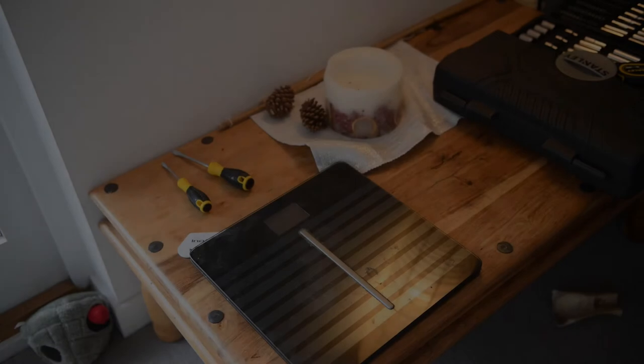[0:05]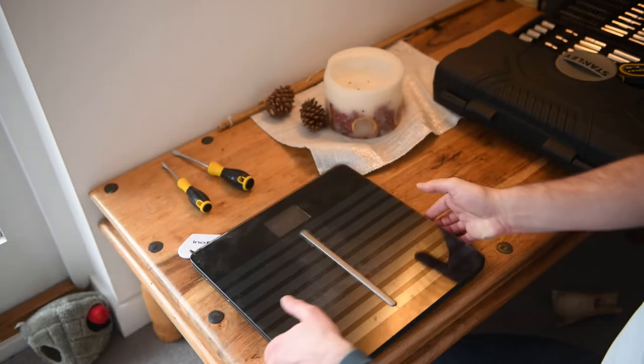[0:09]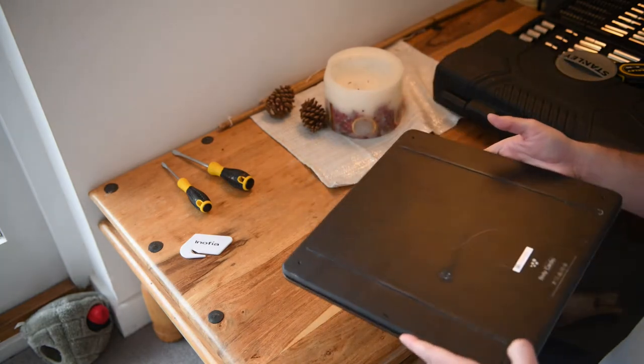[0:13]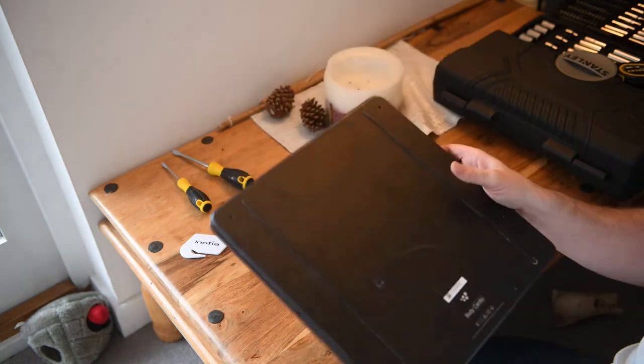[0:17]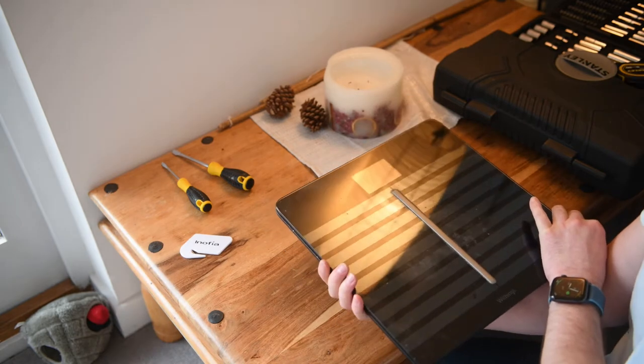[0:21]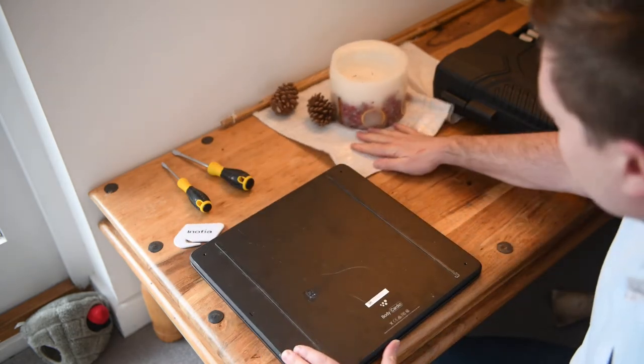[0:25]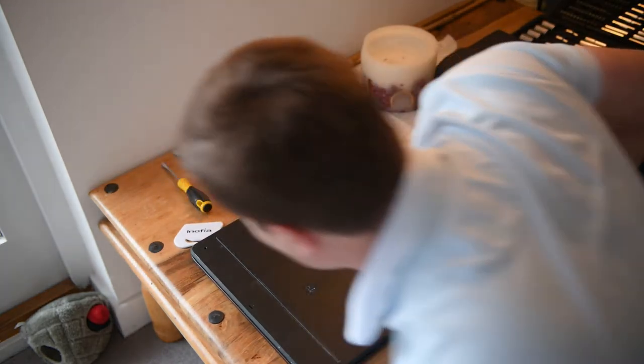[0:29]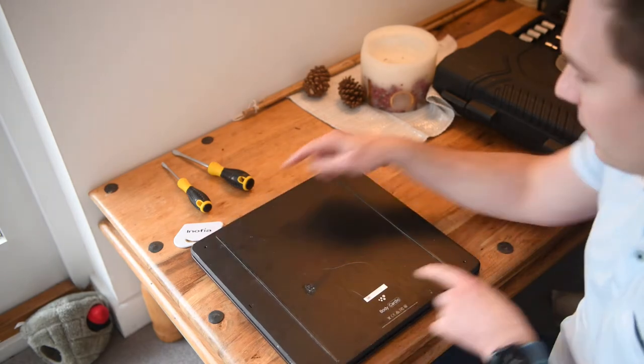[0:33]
Okay, so I wanted to make a quick video because I have not seen any good instructions on how to replace the batteries on the Withings Body Cardio Smart Scale. I guess it's now Nokia. I did a bit of research, and there's no real videos, but there's a few comments about it. So basically you need a T6 screwdriver to take out four little screws in the back of the device.
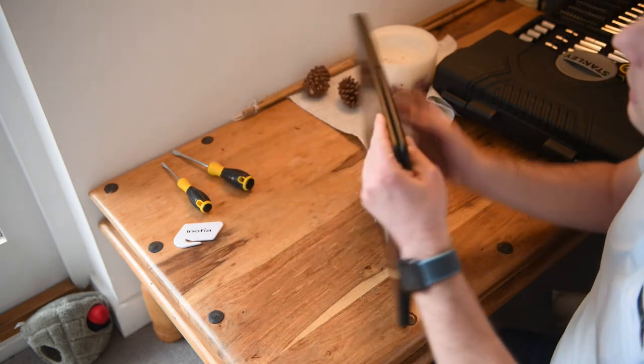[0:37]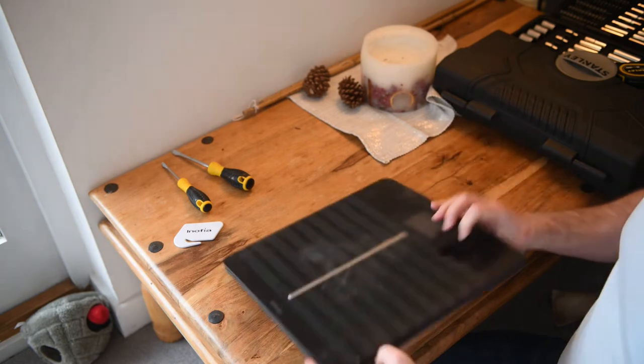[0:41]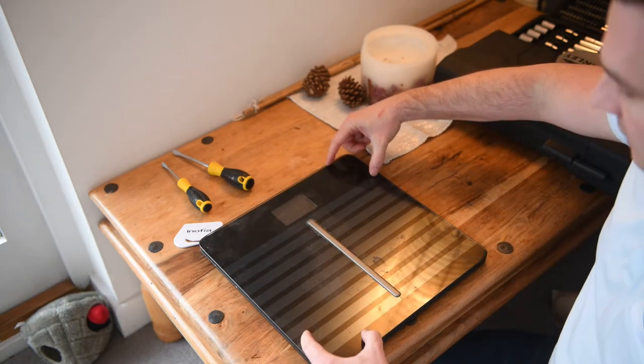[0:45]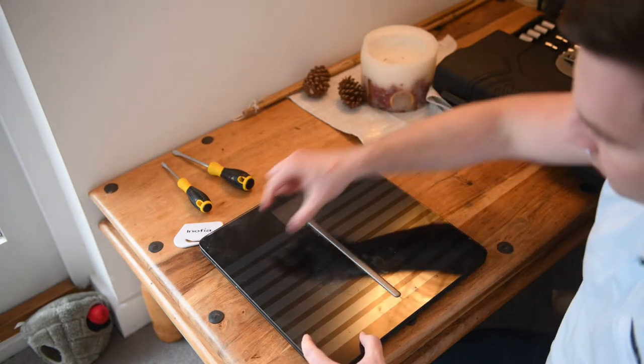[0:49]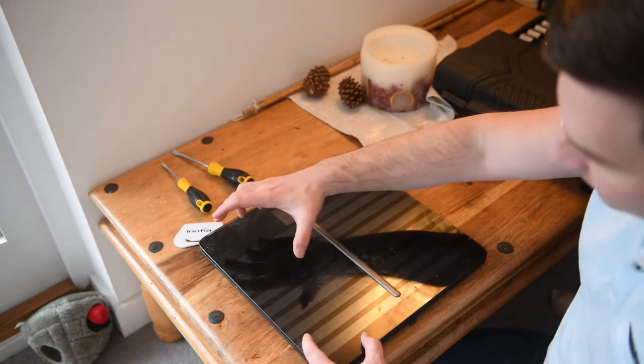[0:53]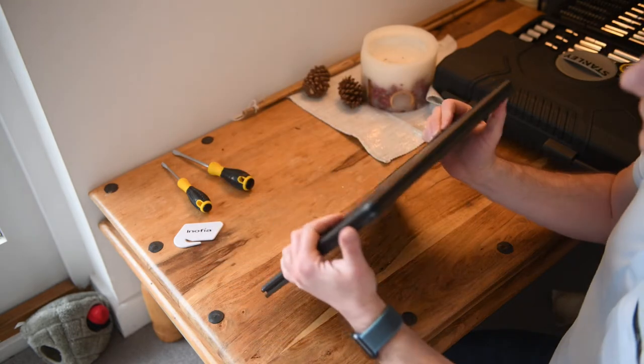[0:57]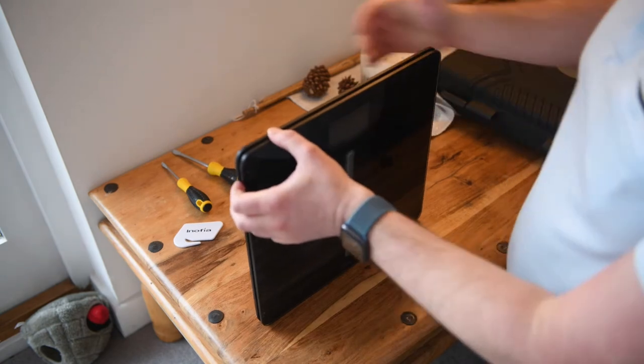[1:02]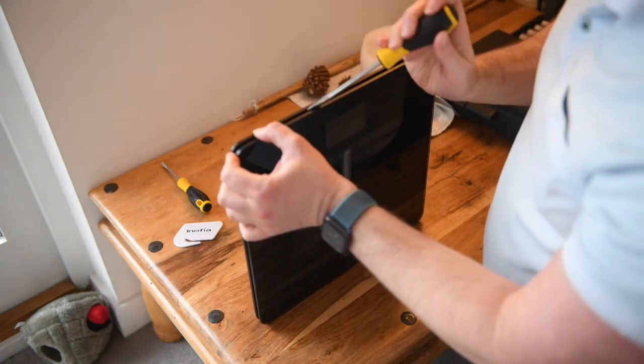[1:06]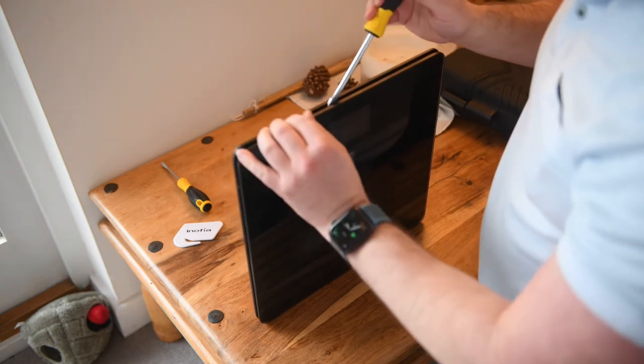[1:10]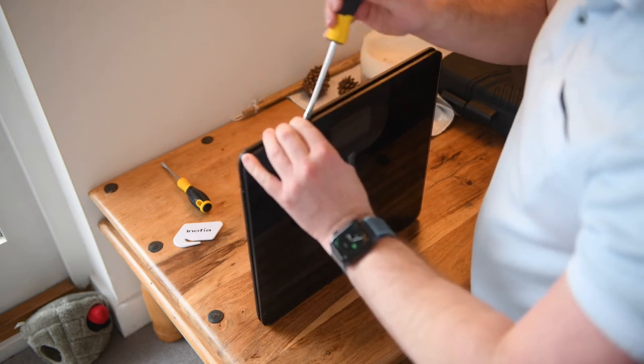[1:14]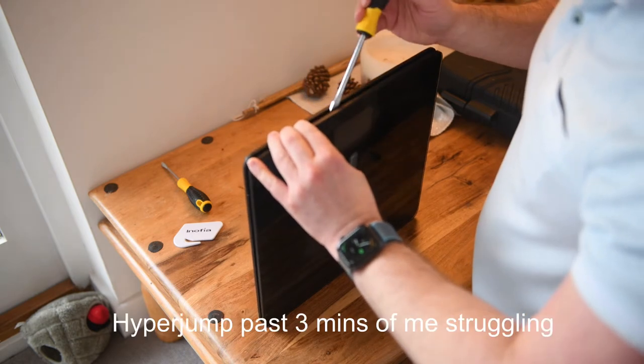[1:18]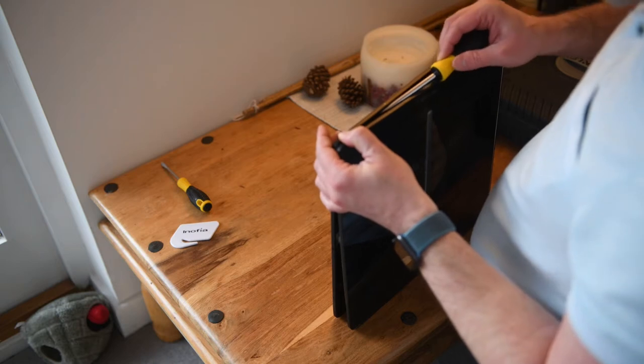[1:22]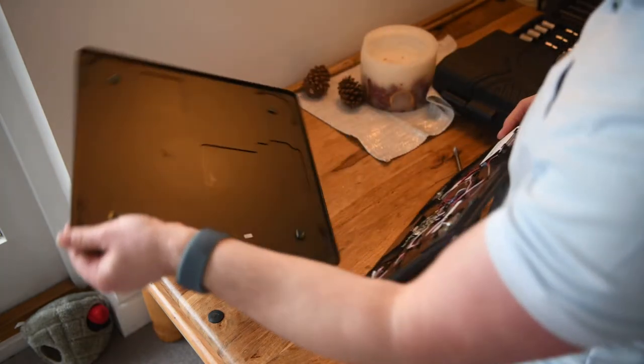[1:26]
And then you have somewhat of a challenging task. There are kind of force sensors, weight sensors, in each of the four corners of the scale behind here. This is really dirty. And right around the edge of those force sensors, there is double-sided tape. So what needs to be done, and probably the camera's out of focus, so apologies, is you need to work to separate the double-sided tape without damaging anything underneath. And connected the USB.
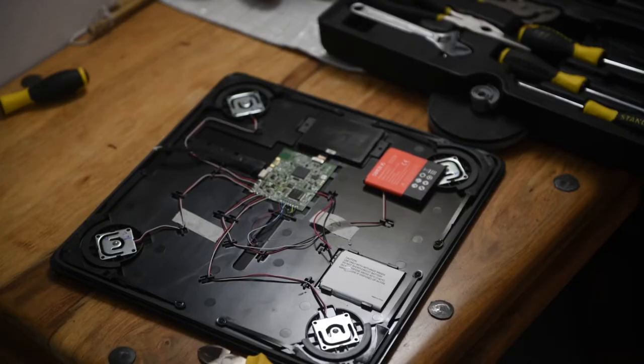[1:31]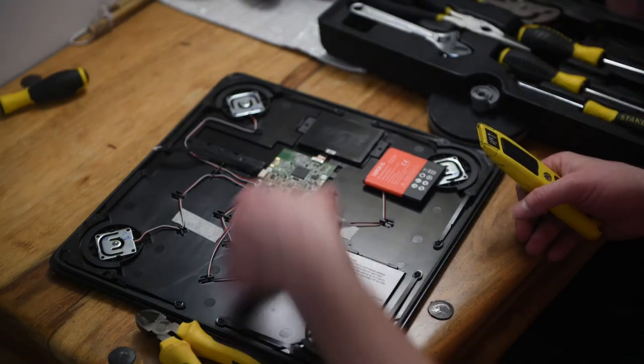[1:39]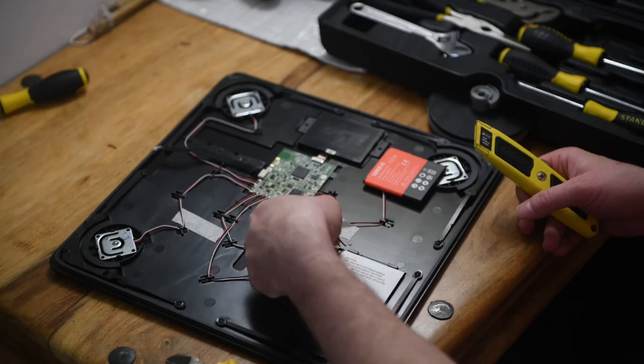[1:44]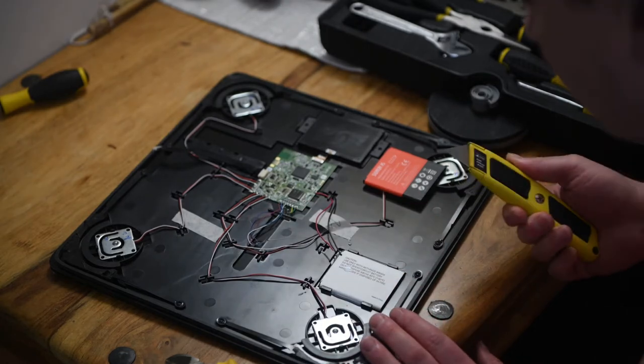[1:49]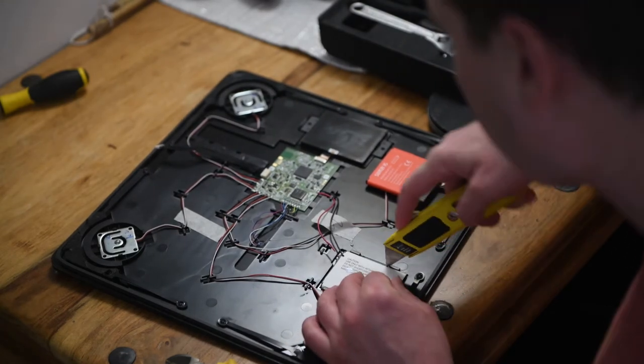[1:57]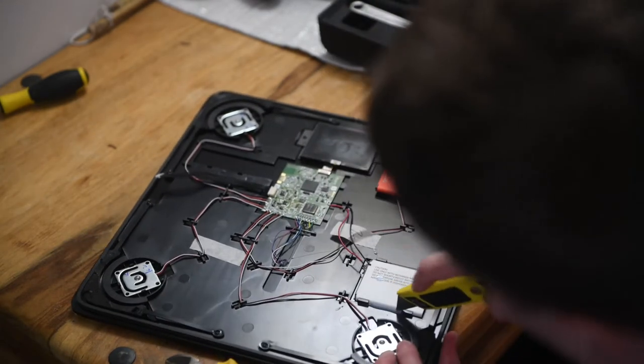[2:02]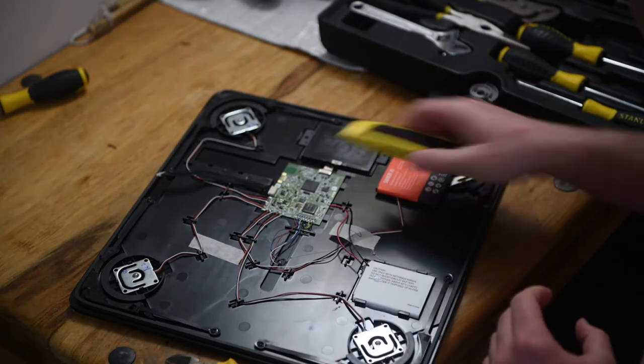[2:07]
There we go. Alright, so that's basically from nothing. Alright, so I'm going to attempt to remove this old battery without causing too much damage, at least initially. I'll probably cause more damage later. Cut the two wires here that are connected to the battery, and I'm just going to reuse them. Planning to connect it on this side, well, because I have to anyways, rather than touching anything on the circuit board side. So what I'm going to attempt to do is separate the hot glue that's connecting the battery on each side. Again, this is the first time I've done this, so it's experimentation at this point.
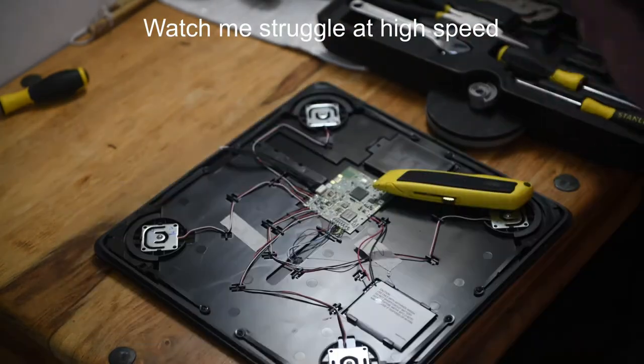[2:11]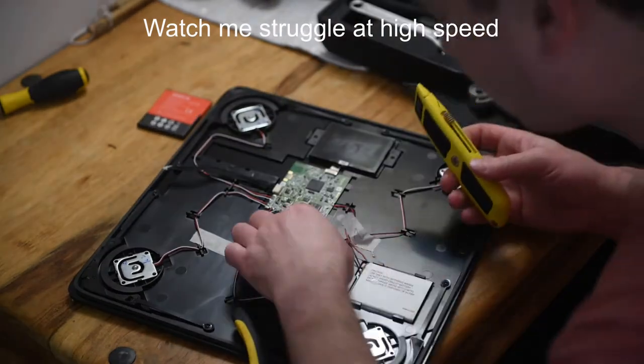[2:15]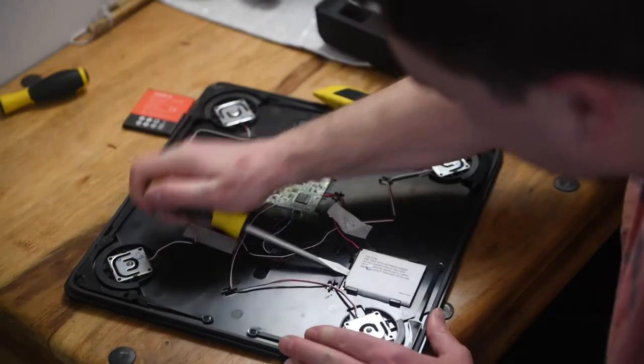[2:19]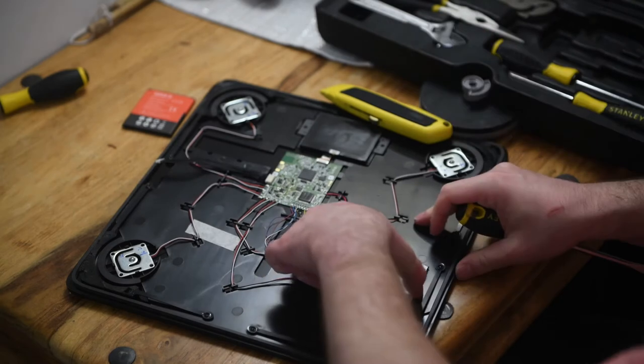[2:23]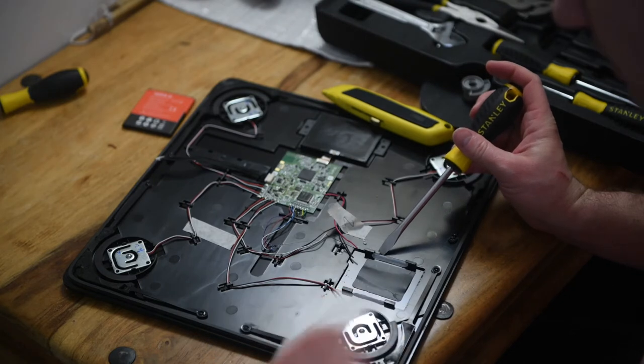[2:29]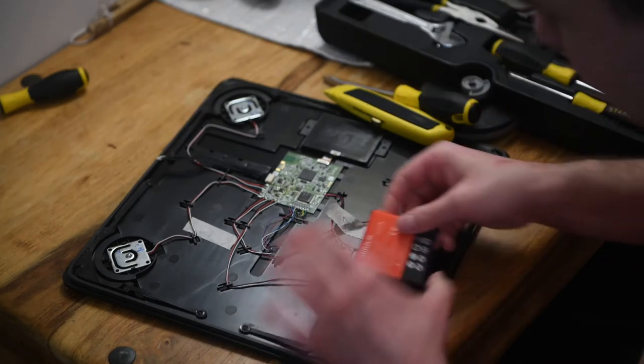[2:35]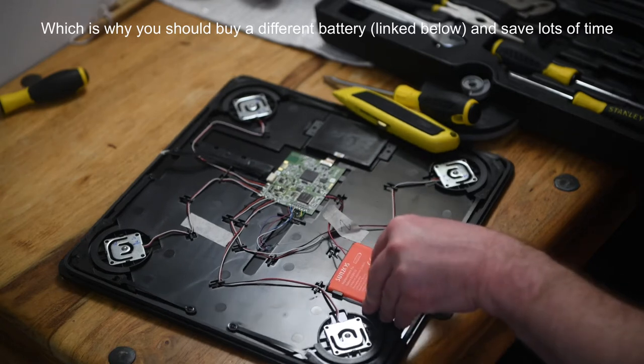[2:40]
Slightly harder for some adhesive. This doesn't fit in here, so that's where I'm gonna get creative. And that's where you probably don't want to see what happens next. So I will sign off for a minute and then be back on.
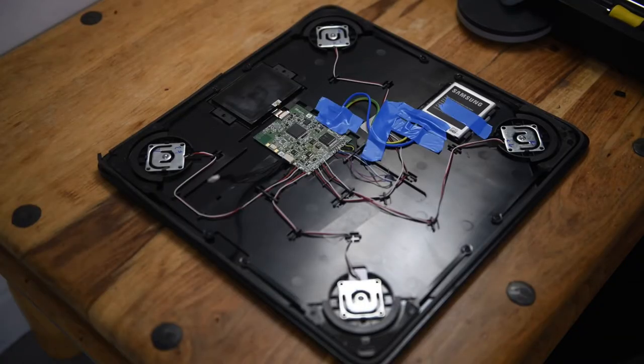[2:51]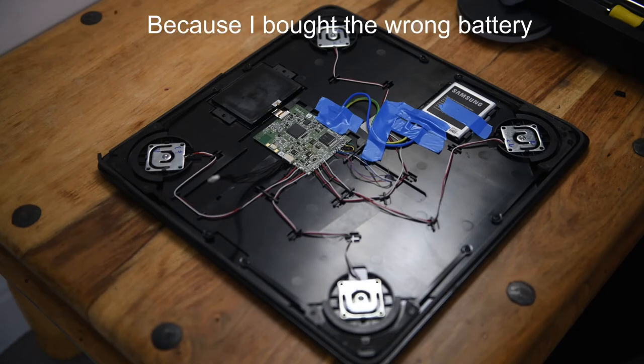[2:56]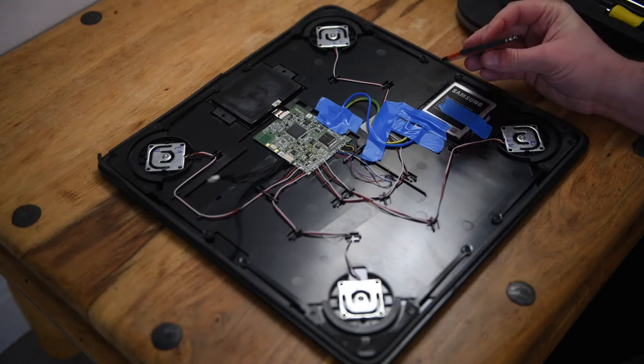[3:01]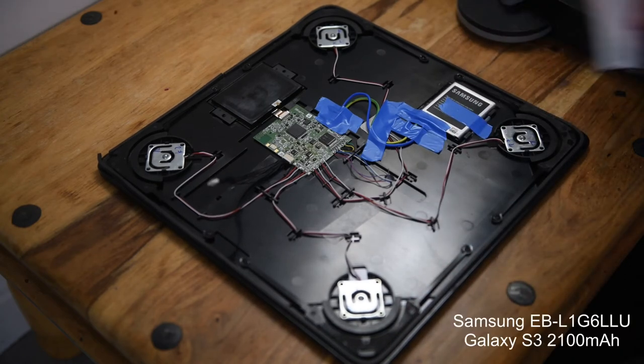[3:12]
Okay, so we have done it. It was about 18 times harder than it probably should have been. I ruined this battery. I don't even know if I ruined it. So the old battery is this one. That is exactly the same size as this one. I'll link this one in my description. You can buy it on Amazon for about $9, £9. It said Samsung Galaxy S3, I believe, but don't take my word on that one. I'll check and put the link in.
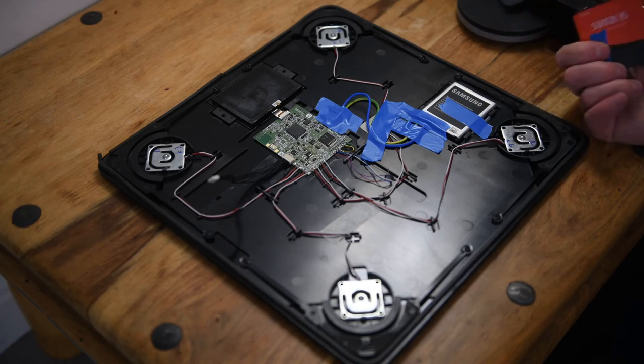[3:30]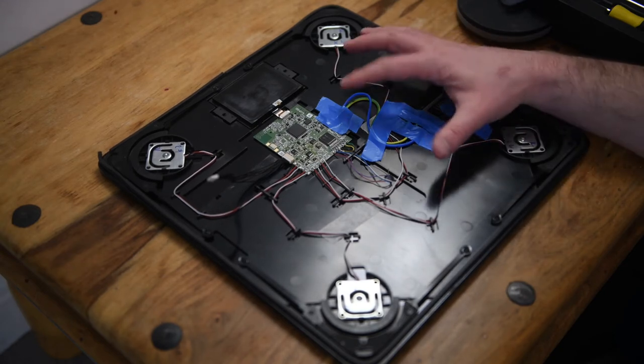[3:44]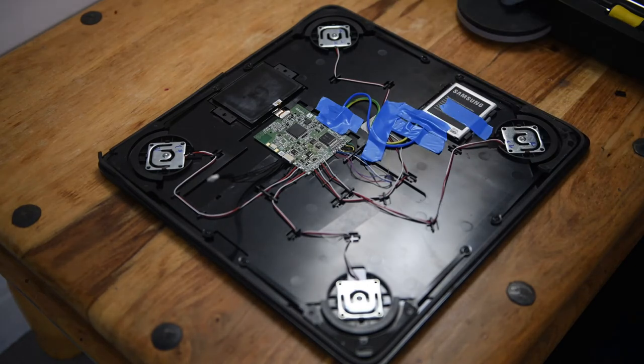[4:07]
I bought this one, which actually didn't fit, and I had to cut out a whole bunch of extra plastic to try and get it to fit, and it was quite a mess and unnecessary. Long story short, I bought another one, and then instead of soldering, I just tried to connect the wires to the existing black and red wires, but unfortunately the existing wires were just so brittle, and the insulation was so thin that it's quite difficult, and eventually I think it must have broken inside or something, because I could not get a good connection at all. I tried everything.
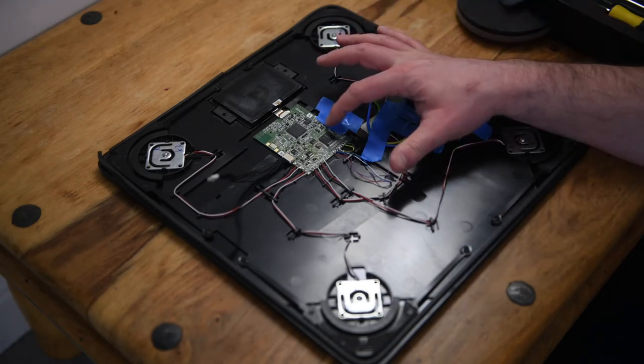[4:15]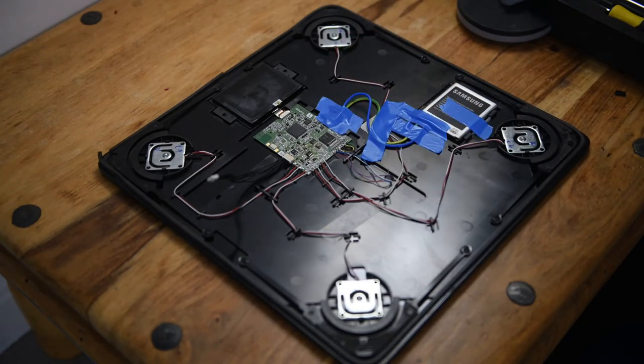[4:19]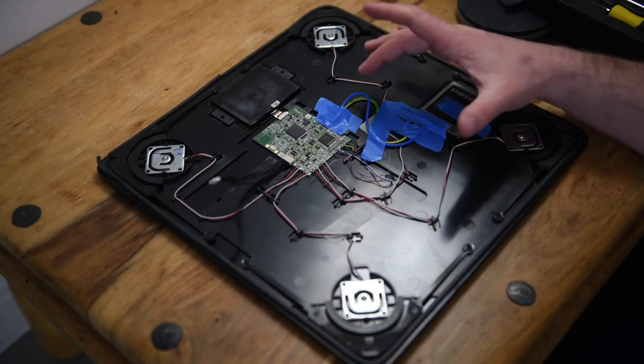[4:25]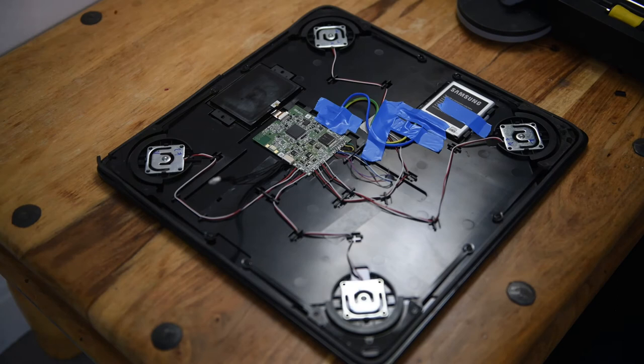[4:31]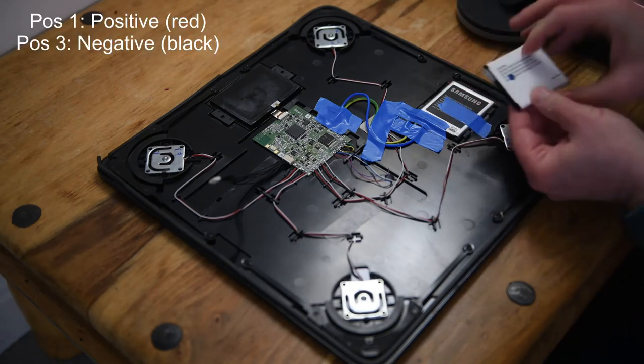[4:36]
So I desoldered the two interfaces. Sorry, I'm not going to uncover this because I just got it working after about 15 attempts. Installed these much thicker copper wires. And then did the same, solder them on here. I think I mentioned this before, but essentially the positive is the one when it's sitting like this, the one farthest in this direction. And then if that's 1, 2, and then 3 is the negative connector.
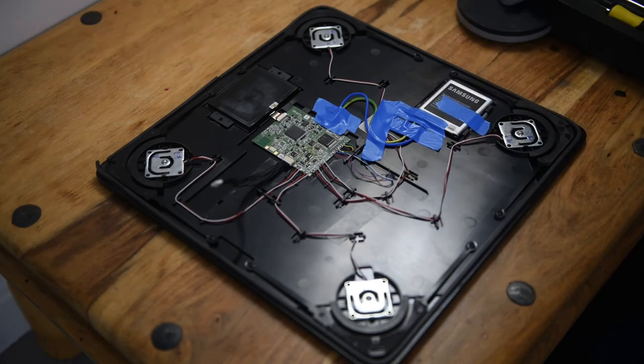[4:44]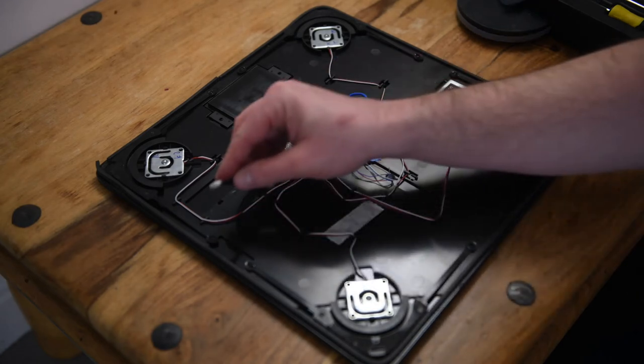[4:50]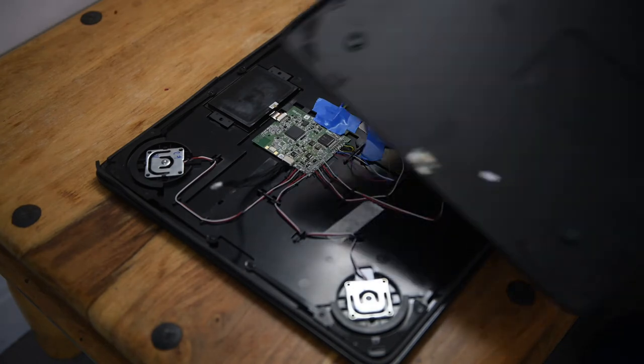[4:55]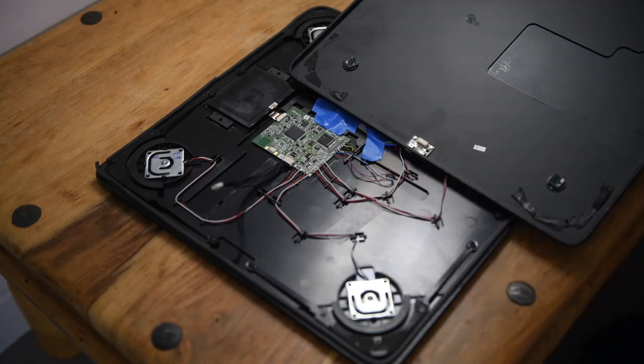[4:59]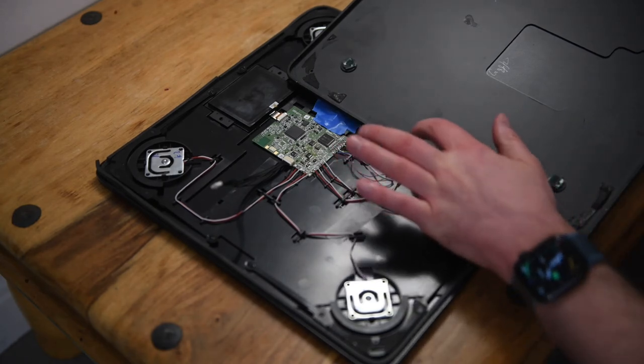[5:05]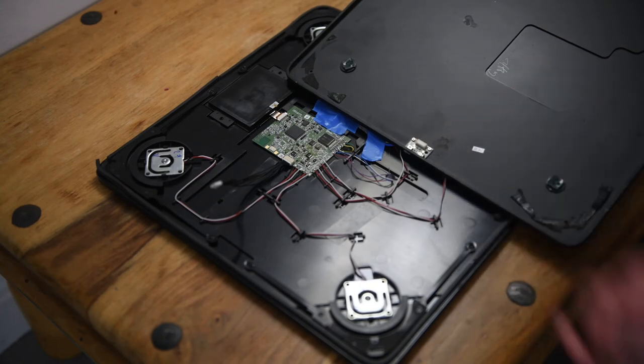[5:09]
So this is how it works. And you can actually take this button off of here, which is the other side. Connect it straight on there. Then you can do testing without having to put the back on, which makes it way easier. There's just two small Phillips head screws on either side there. And then you just need to plug this little small circuit board in here, and then that includes the side button.
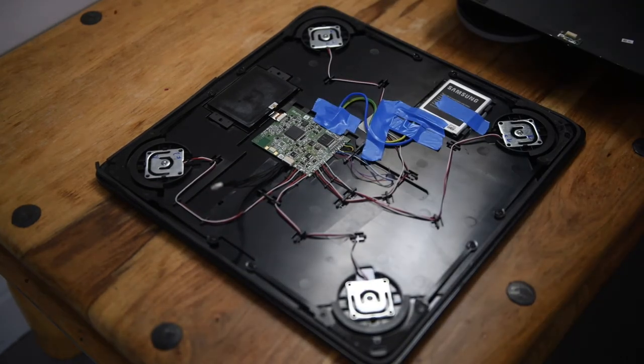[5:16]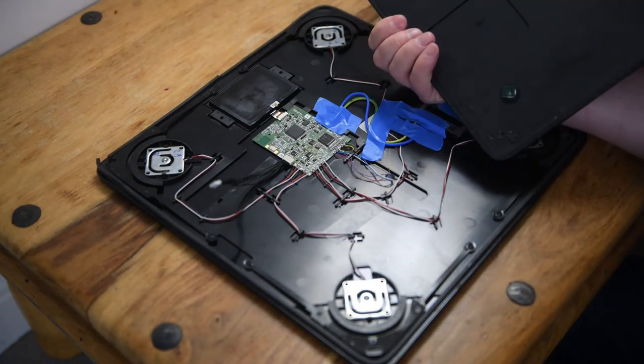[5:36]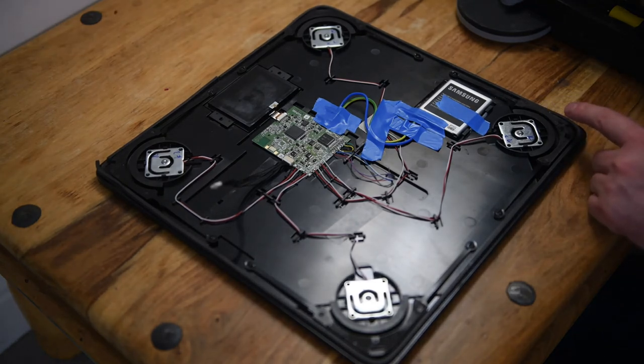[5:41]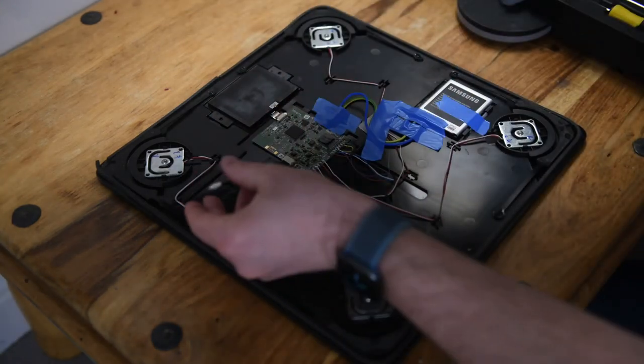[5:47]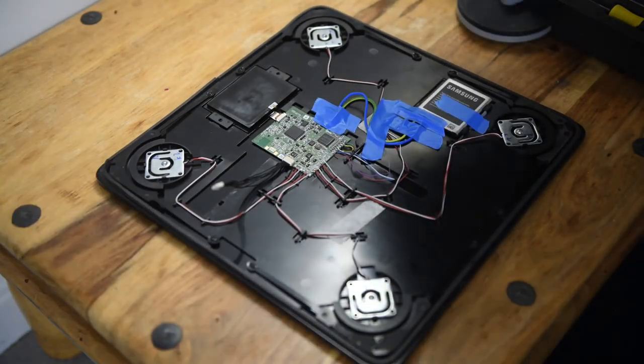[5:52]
Okay, there was a little button that had fallen out, so if you take off this little circuit board, you need to be aware there's a little black button that sits here. When you have it in correctly, you can hear it's clicking. So I've reinstalled that. Now to reinstall, put this back on, reverse taking it off. There is double-sided tape inside, on the different corners. I'm not particularly worried. Like I said, it kind of naturally stays together, so I'm not particularly worried about it needing to be replaced, apparently. Well, that looks like it kind of damaged one of these seals so water doesn't get in. Just to watch when I shower.
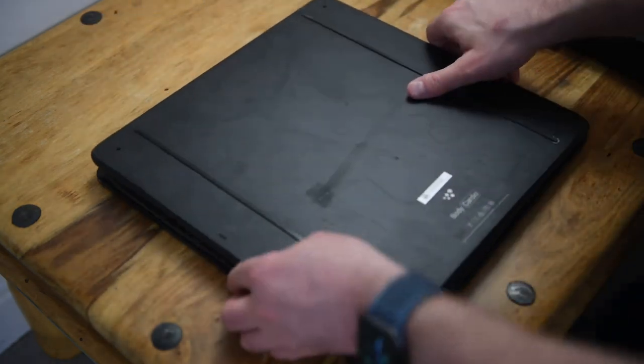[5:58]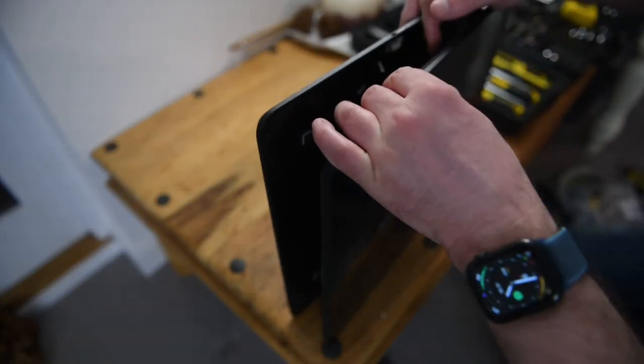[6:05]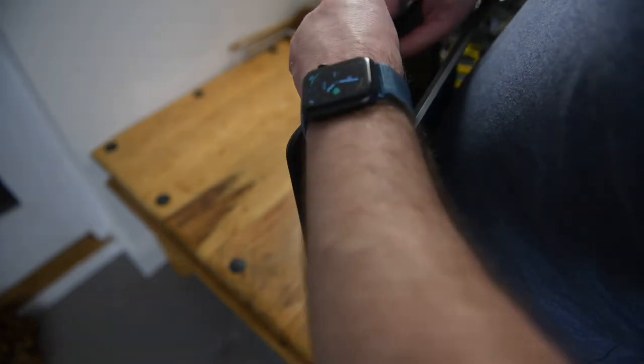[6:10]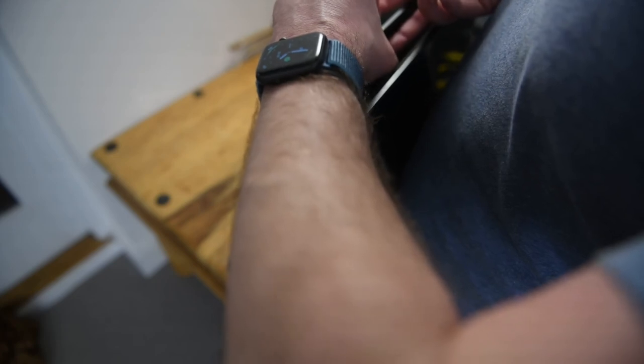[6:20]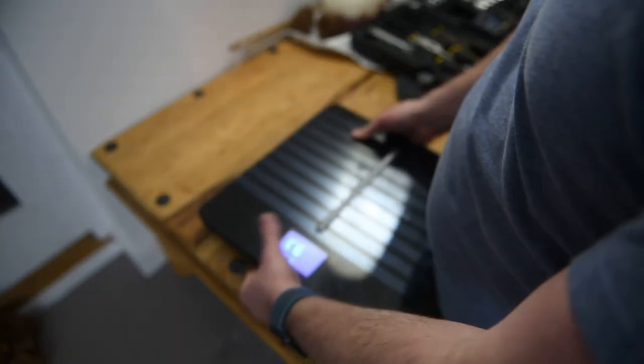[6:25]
Okay, so to put it back together, you need to put the two pieces next to each other, like this. Slide the cable in, and you just need to wait till it clicks. There you go. So what you can see actually is the battery is working now. Okay, does zero. That's good.
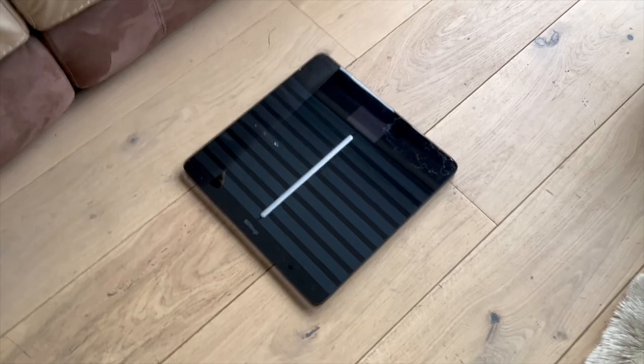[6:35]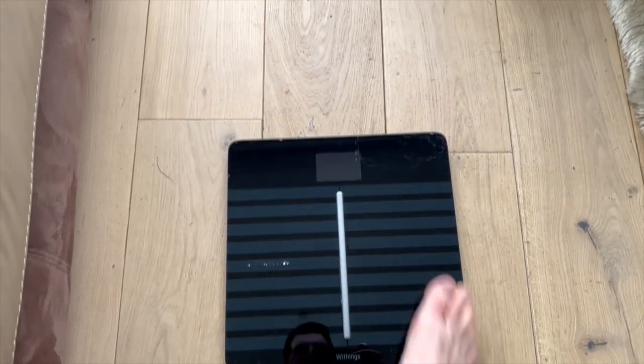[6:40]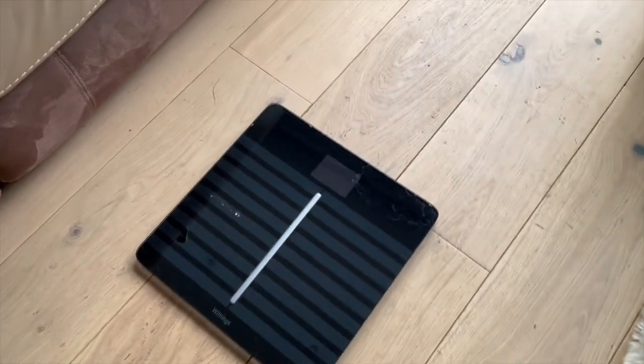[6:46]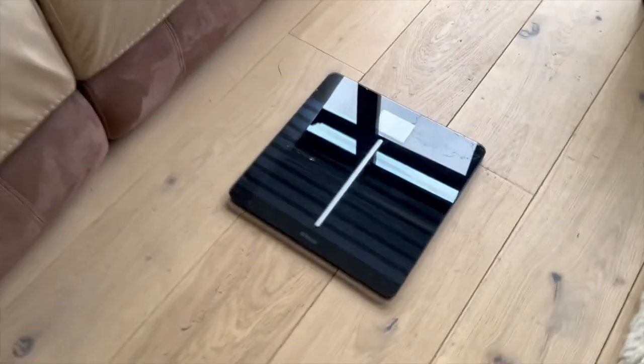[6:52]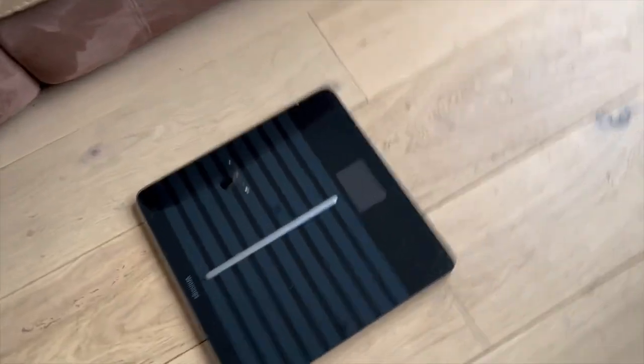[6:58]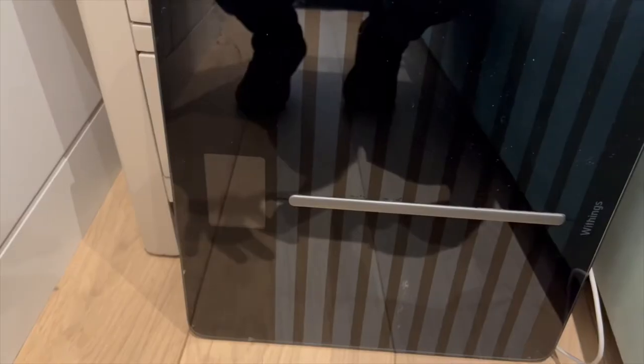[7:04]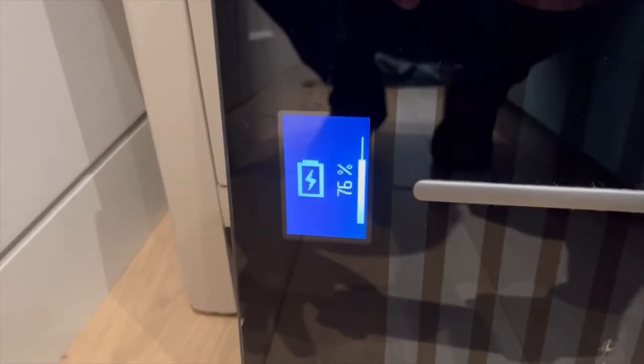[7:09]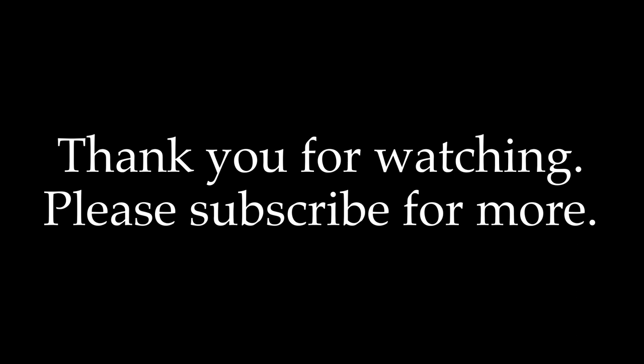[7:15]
One year following up or so, and the scale with the new battery is working great. It holds a charge for probably 3 to 6 months, so it's not been a problem having had a different model of battery. It charges just fine. And yeah, the only issue, you can see where I've damaged the coating on the back of the glass. Here you can see that it's charging as well when you plug it in. So yeah, able to charge and works fine.